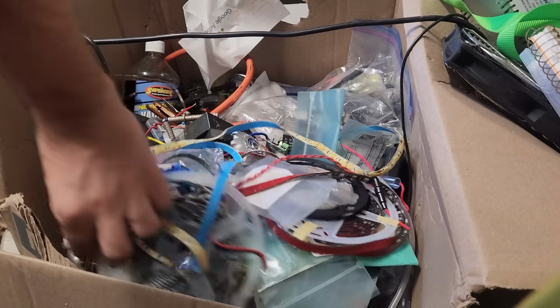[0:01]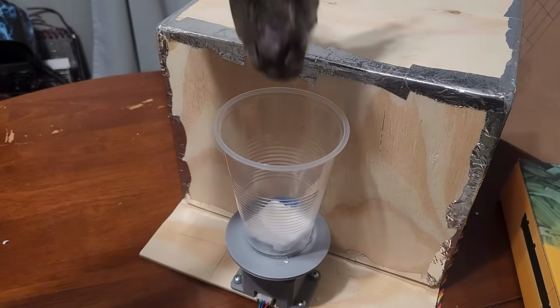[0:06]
Yeah, let's see here. Something to make a video with. Oh, how about a dead rat? Let's chuck him in this guy here.
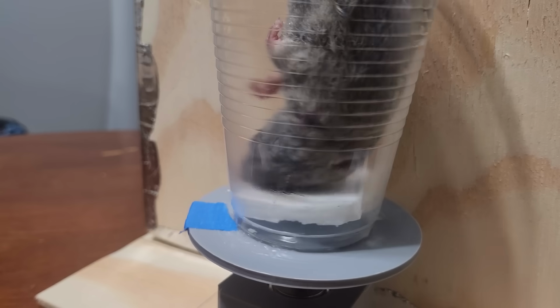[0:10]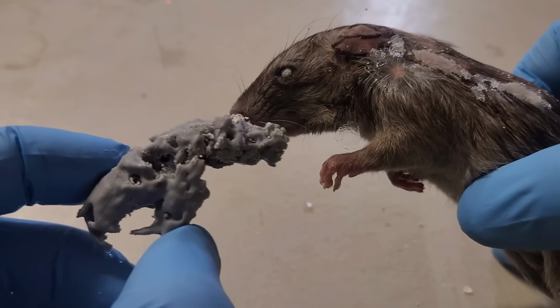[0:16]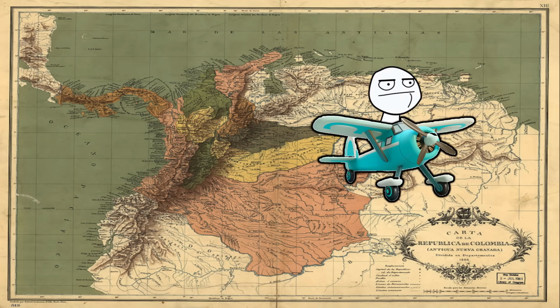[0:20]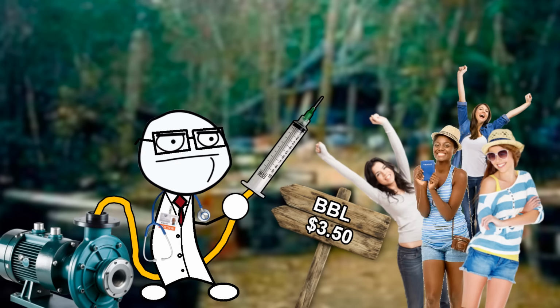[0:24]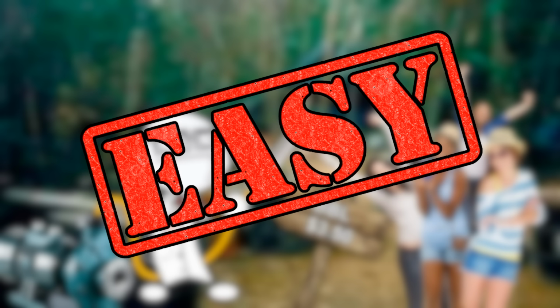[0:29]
I've just recently gotten back from a trip to Colombia where I was making a bit of extra money performing discount BBL operations, and the whole thing got me thinking, being a doctor isn't really that hard. So with that in mind, let's play doctor in this video by revisiting the x-ray machine.
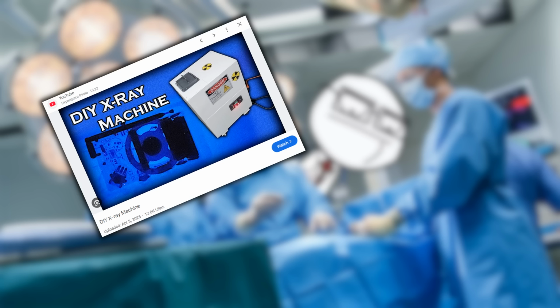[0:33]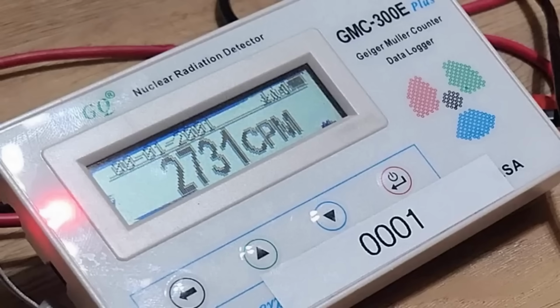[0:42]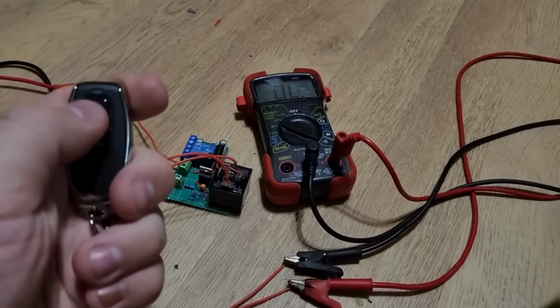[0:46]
A few months back, I built this DIY x-ray machine, which actually worked pretty well, but it's a bit clunky and the 2mm lead shielding I used probably wasn't enough. There was a lot of stray radiation coming off that machine, so I had to be pretty far away and operate it with a remote control when I wanted to take a picture.
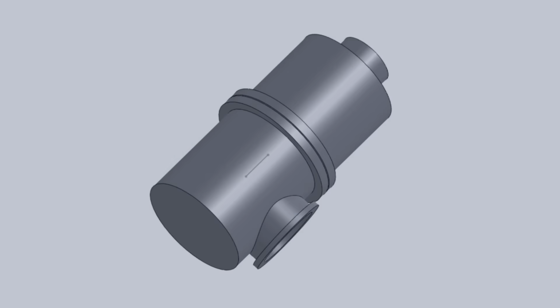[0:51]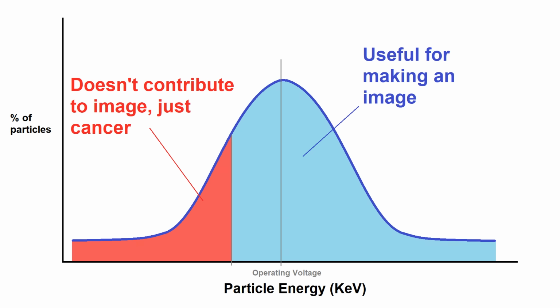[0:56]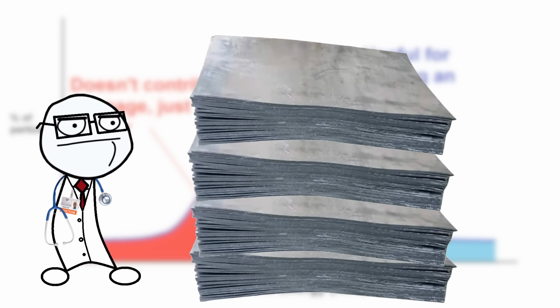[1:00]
So I started designing an aluminum housing for my x-ray tube to help filter out some of those lower energy particles that don't contribute to the picture and are just energetic enough to give you cancer. And I also started stacking up as much lead sheeting as I could possibly get my hands on.
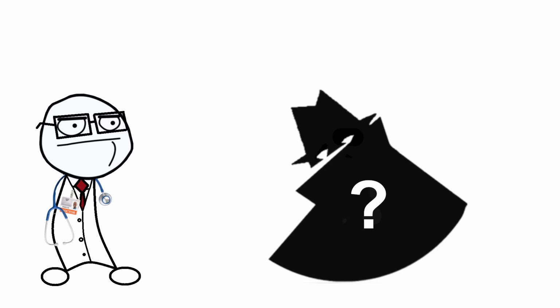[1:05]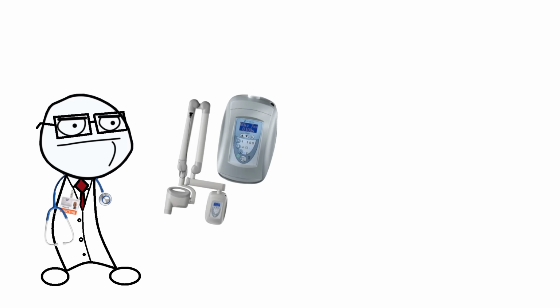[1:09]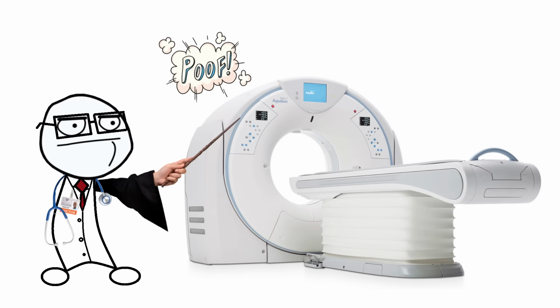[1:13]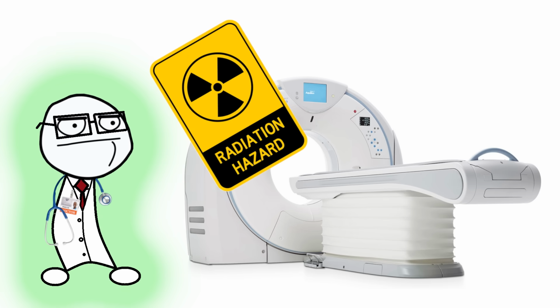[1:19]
But in the middle of doing that, one of my Patreon members, who wishes to remain anonymous, sent me a fully working dental x-ray unit. Now when you get a gift this cool, you don't just let it become a paperweight in the shop, so let's turn it into a CT scanner. I was already planning on doing this with my original x-ray machine, but having a real one will make it a lot easier and less likely to irradiate me.
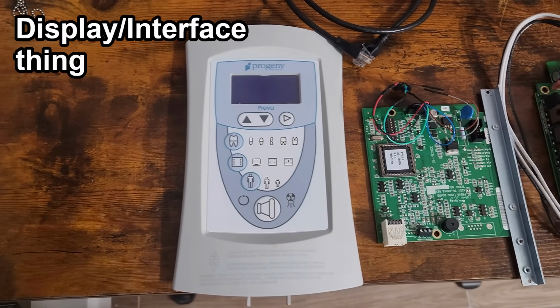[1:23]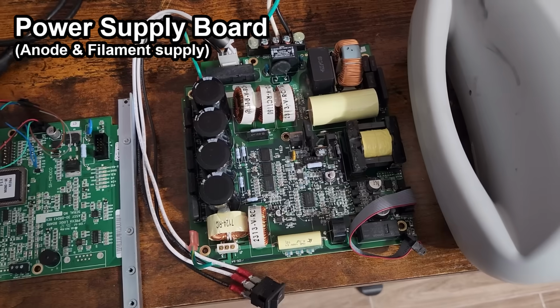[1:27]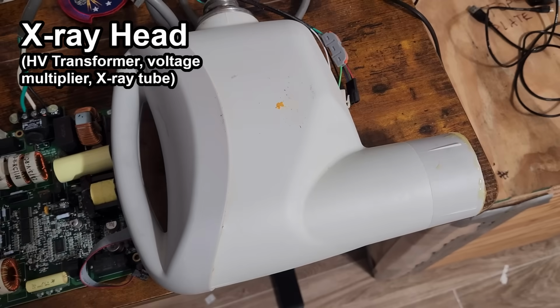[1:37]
The unit consists of four main parts. We've got a display head interface type thing for the operator, a logic board with some software on it, and a power supply board for the x-ray head itself. So I guess this is going to be the H-bridge that drives the high voltage transformer and also the supply for the tube filament. And finally, here's the head itself, which contains the high voltage transformer, x-ray tube, shielding, filters, etc.
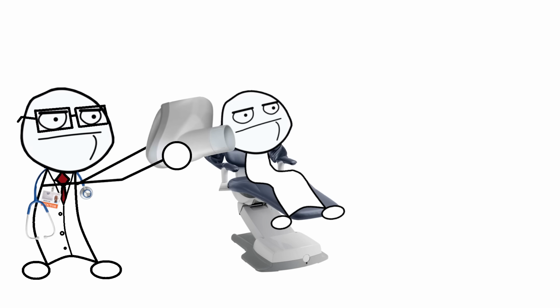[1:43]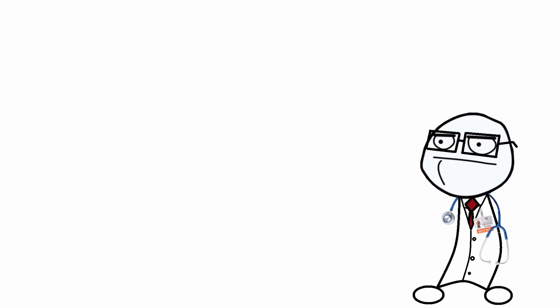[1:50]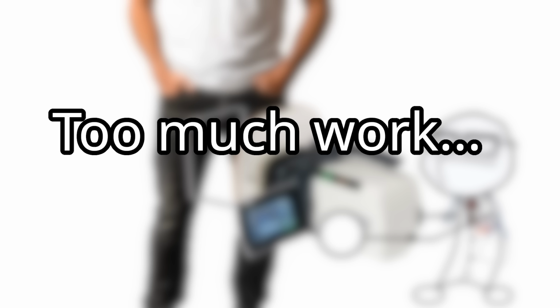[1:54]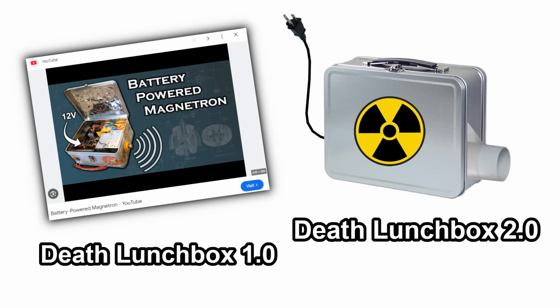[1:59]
The head is the part that the dentist sticks in your face that's usually on a big arm assembly thing, and the rest of the equipment lives in a box that's typically mounted on the wall, although recently a lot more x-rays are portable battery-powered units. I'm not going to do the extra work to make this thing fully battery-powered, but I'm going to make it fairly portable by repackaging all of it into an enclosure approximately the size of a big lunchbox.
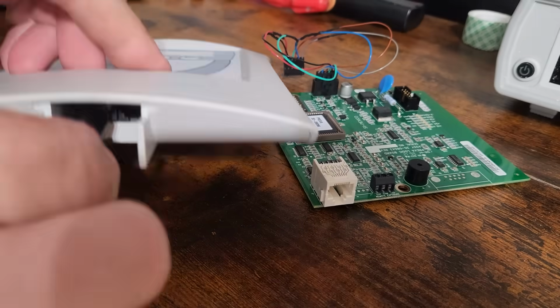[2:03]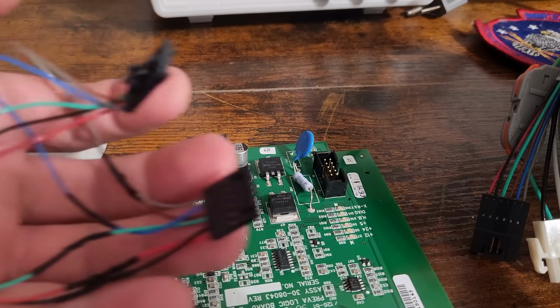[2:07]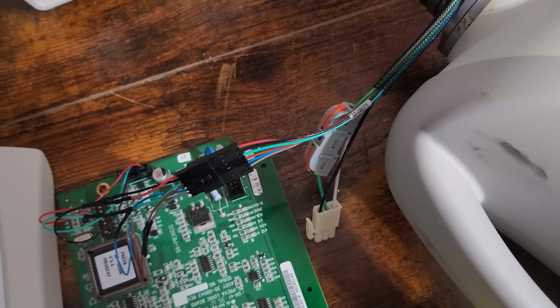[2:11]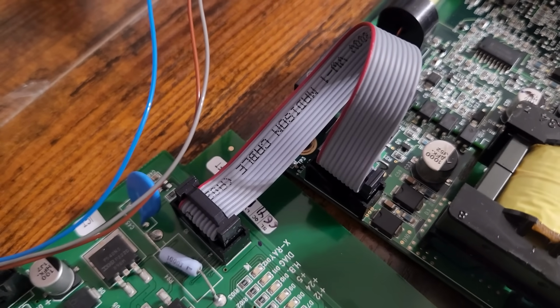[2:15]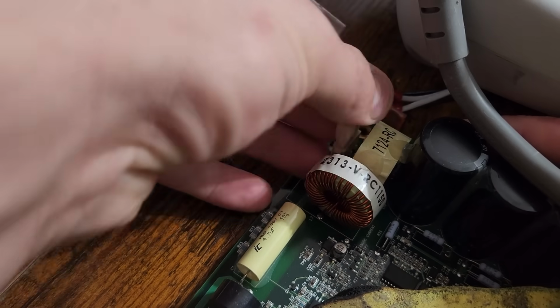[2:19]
But first, just a quick test to verify functionality. I plug in the display head to the logic board with an Ethernet cable, and then had to make this jumper cable thing that goes from the logic board to one of the connectors on the head. Then I connected what appear to be some logic pins between the power supply and the logic board, and finally what appears to be a power connection to the head itself. Here's the whole thing set up on a table ready to test.
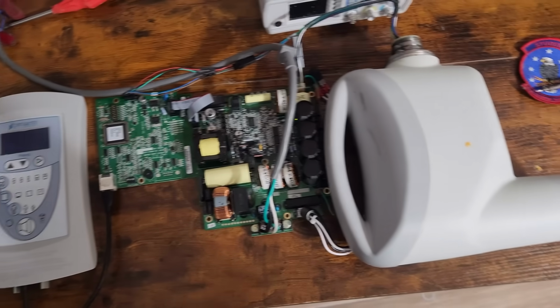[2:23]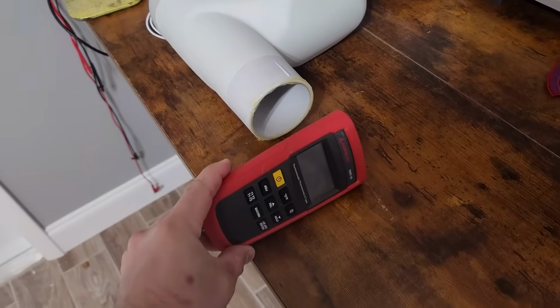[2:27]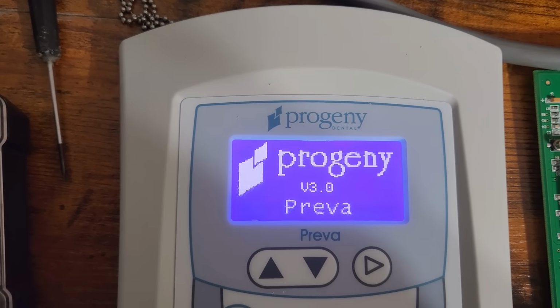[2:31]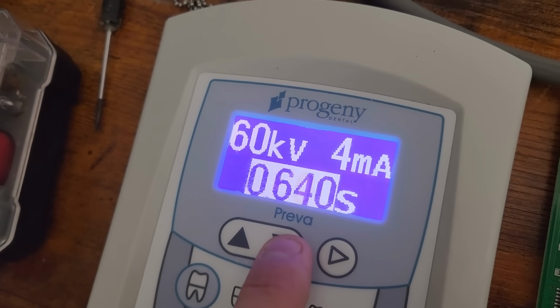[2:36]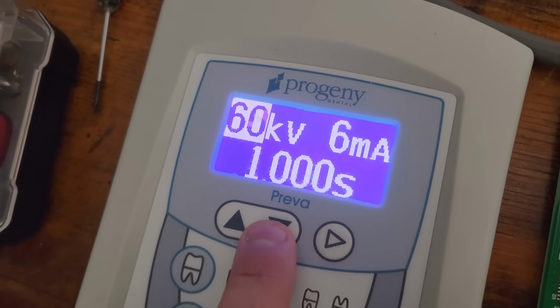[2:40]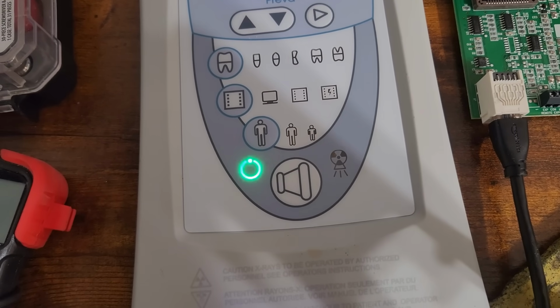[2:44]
I'll put a small intensifying screen in front of the head with my thermocouple meter as a target, and then I'll power up the unit. Okay, the screen comes up, so that's a good start. The interface is pretty self-explanatory and easy to use. The maximum power setting is 6 milliamps at 70 kilovolts with a maximum exposure time of 1 second. To fire it, I just hold down the button and the x-ray fires for the preset time.
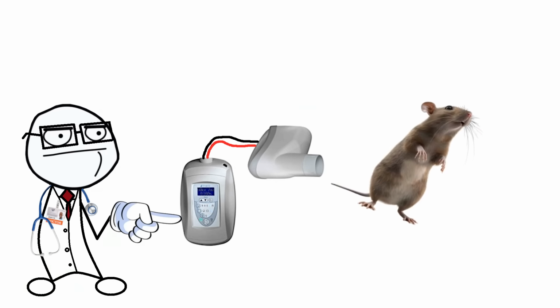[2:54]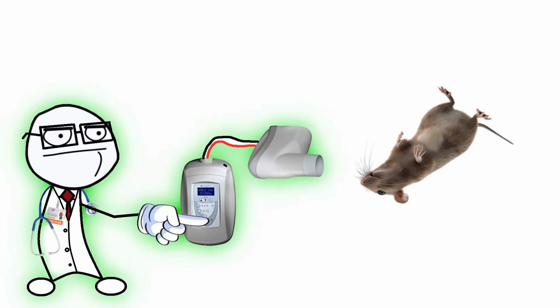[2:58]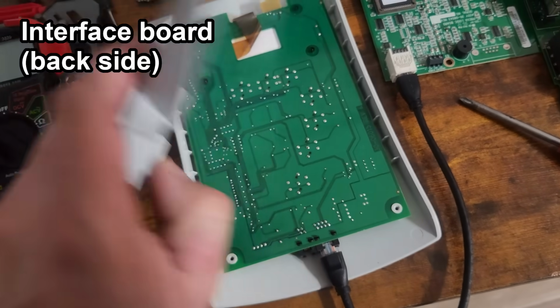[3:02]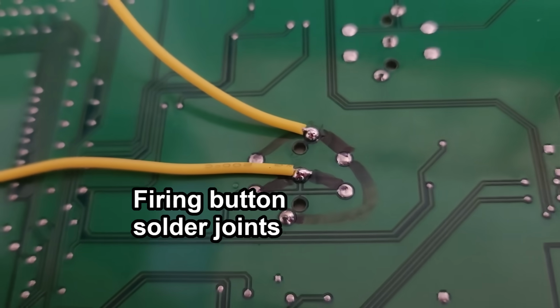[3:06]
Picture looks pretty dim, but this was during the middle of the afternoon and I couldn't get my room very dark, so that's to be expected, but everything is working perfectly. A CT scan takes hundreds of images, so obviously it's not going to work for me to just sit there and press the button each time because I'll get really bored and probably irradiate it too. Fortunately, the firing button is just a simple single-pole switch, so I'll just solder some leads onto the PCB that'll allow me to close the switch with a microcontroller-driven relay.
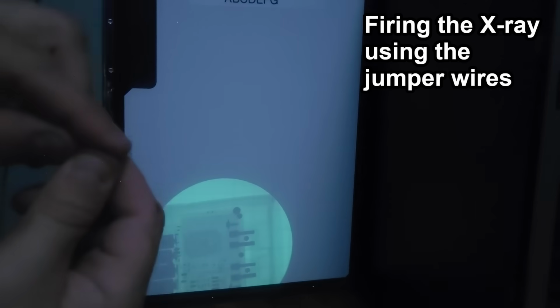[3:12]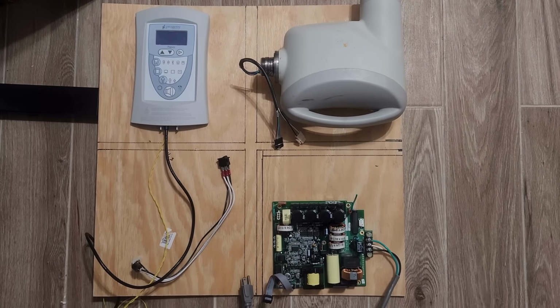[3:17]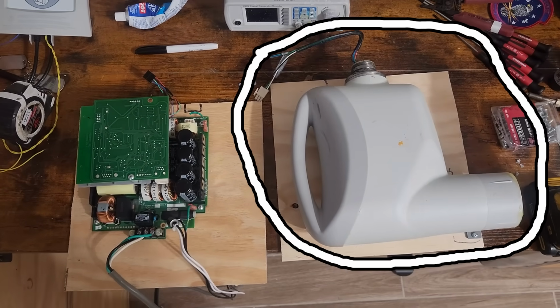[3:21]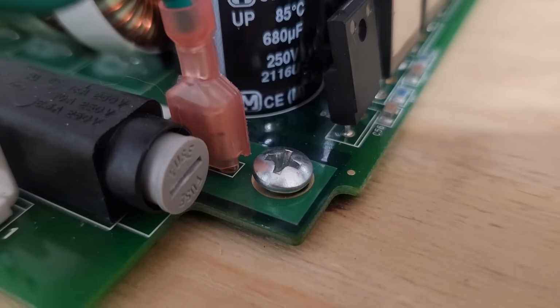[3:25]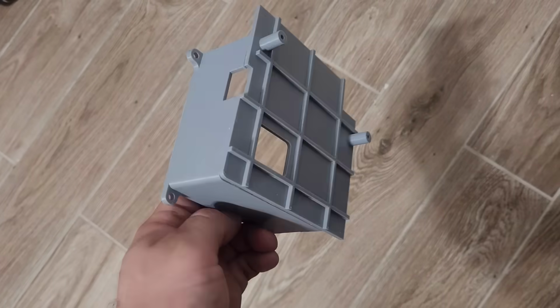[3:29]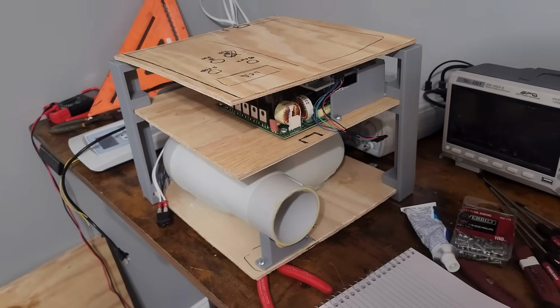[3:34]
Next, I'll mount the pieces of the assembly onto wooden boards, which will go inside a wooden box. The X-ray head will go on one board, and all the PCBs and other electronics I'll add will go on another one. The power supply board will be screwed onto the wood, and the logic board will sit on top of it with this funny 3D printed adapter thing I designed. Then the wooden boards are screwed together with some outer panels using these 3D printed brackets.
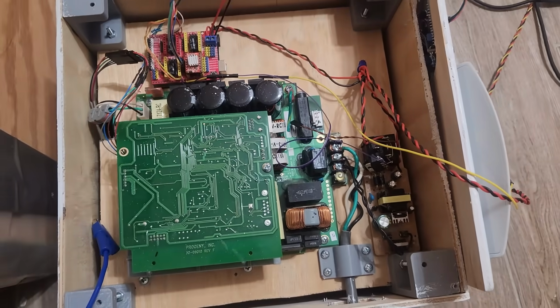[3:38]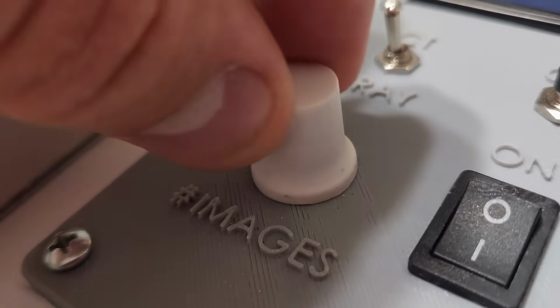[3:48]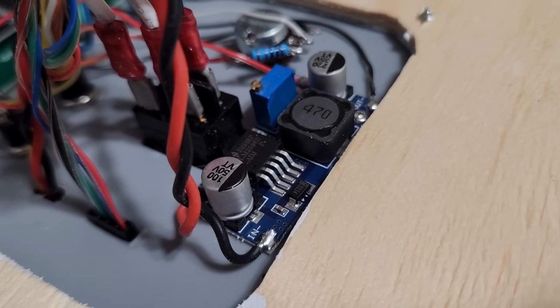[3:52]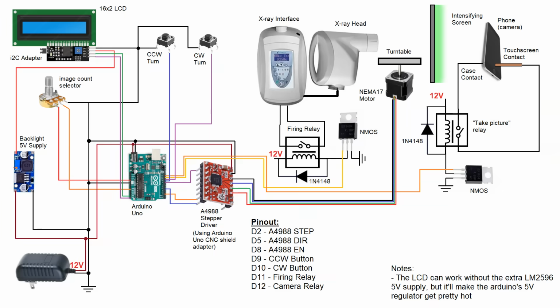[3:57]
Next, I add the control circuit. This is an Arduino that'll control a relay to turn the x-ray on and get the images, and control the turntable stepper motor based on the number of images taken, which will be selected by a potentiometer. The setup also has a buck converter to convert 12 volts to 5 volts to run the LCD backlight, because doing it with the Arduino's linear regulator can make it pretty hot. Here's a diagram of the whole setup.
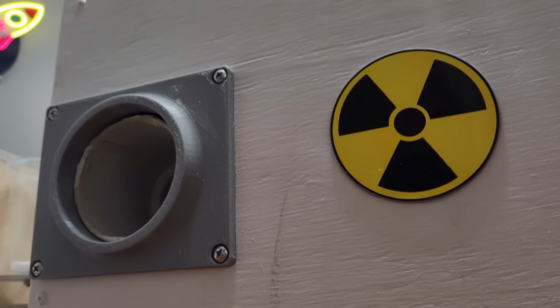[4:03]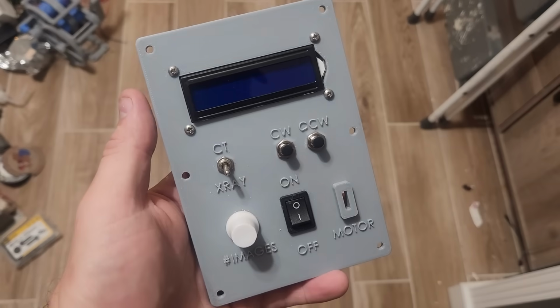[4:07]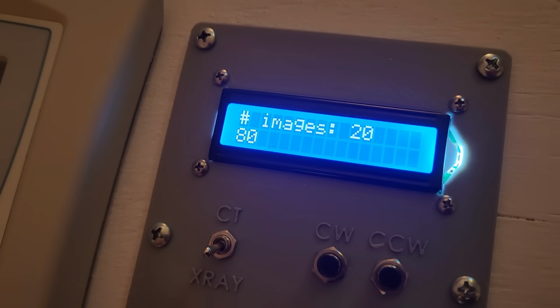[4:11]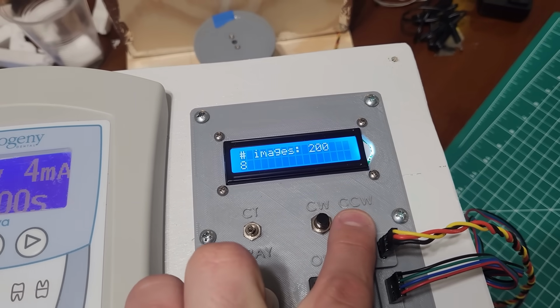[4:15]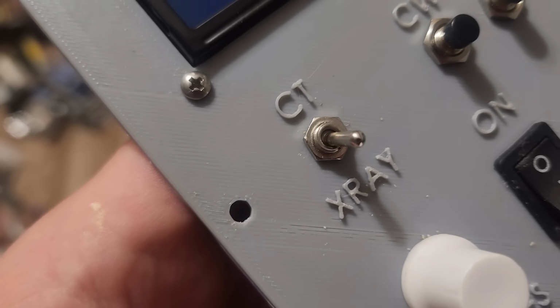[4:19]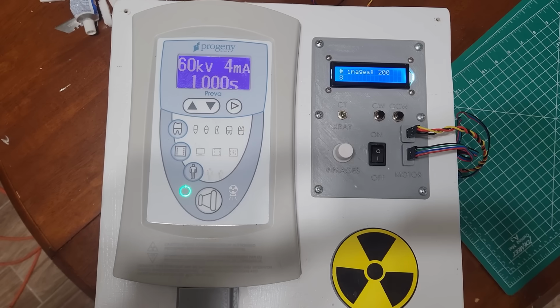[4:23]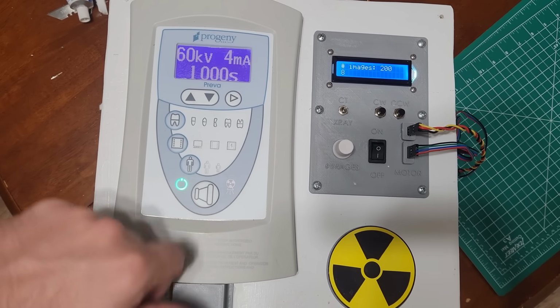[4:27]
Once all that is in place, I paint the box, add some decals to make it look semi-presentable, add a little collar to the output lens thing, and then I printed this interface panel for controlling the scan. With this, you can dial in the number of images for the program to take across a 360-degree sweep, and you can manually turn the stepper motor with it too. I also added this switch to toggle between single X-ray and CT scan mode, but it was totally unnecessary because I remembered the original interface module still works to do that. I didn't feel like reprinting, so there's just a switch here that does nothing.
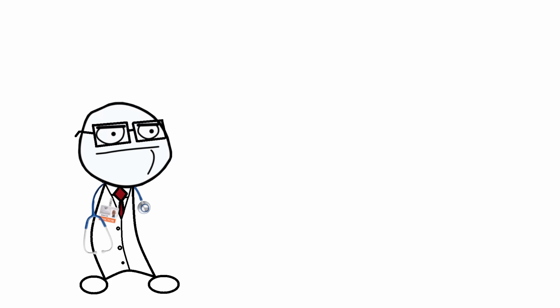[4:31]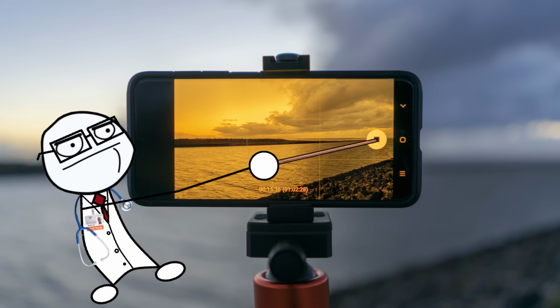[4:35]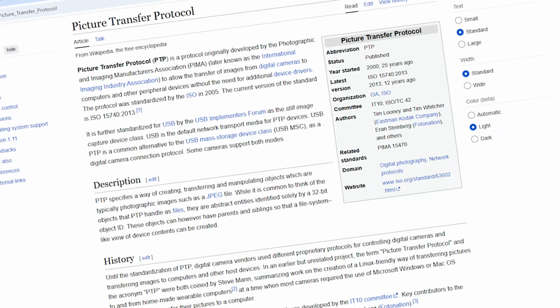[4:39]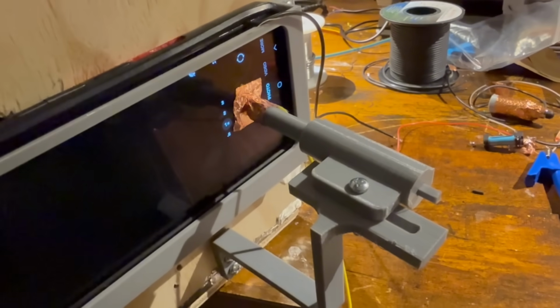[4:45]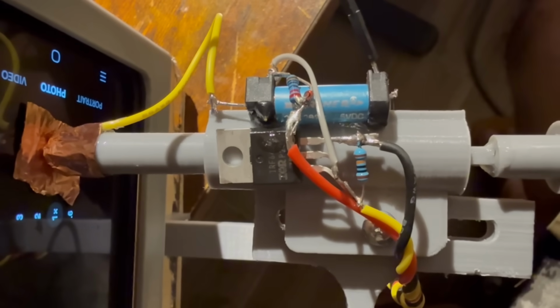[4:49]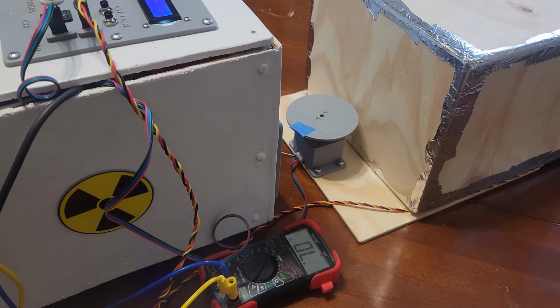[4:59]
I didn't have a proper dedicated camera, so I'm using an old phone, and I need a way to trigger it to take a picture when the x-ray turns on. There are several software solutions to doing this, but they're all kind of annoying, so I'm gonna do it the brute force way with hardware. This is done with a little spring-loaded pin that pushes a wire up against some conductive tape on the screen of the phone where the picture button is. The wire and tape are electrically connected to the phone case via a small relay when it's time to take a picture, and this electrical contact triggers the touchscreen to go off.
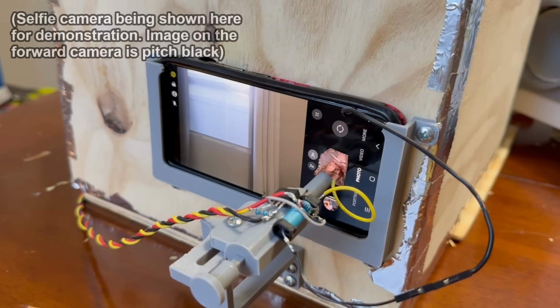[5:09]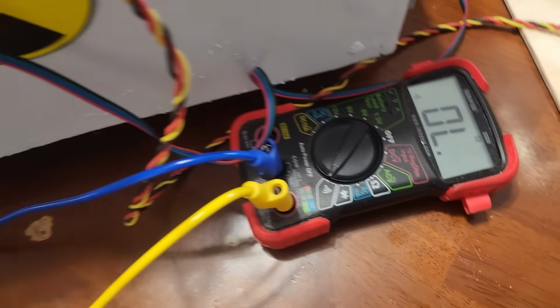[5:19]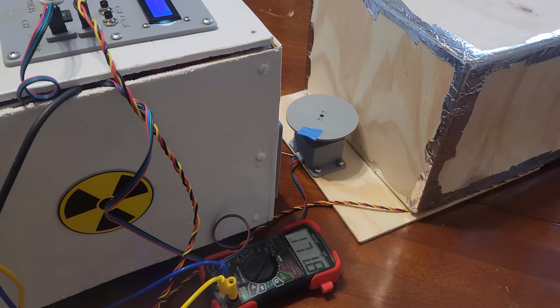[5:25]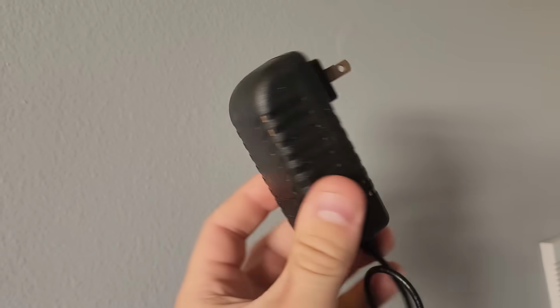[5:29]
The beeping is from my multimeter, but it'll be the switch for the x-ray that's closing when I do the actual CT scan. Alright, that seemed to work. Now let's try it with the actual x-ray running. For a first test subject, I'll try scanning this 5-volt wall wart.
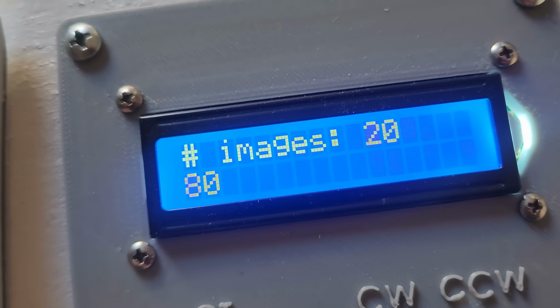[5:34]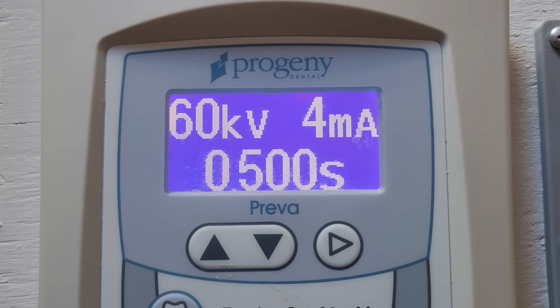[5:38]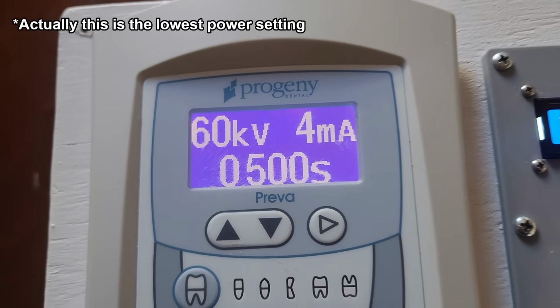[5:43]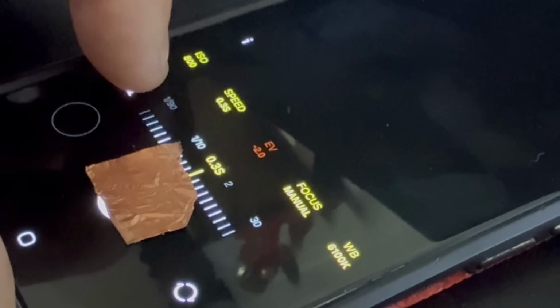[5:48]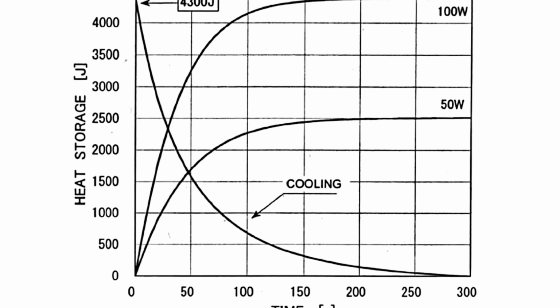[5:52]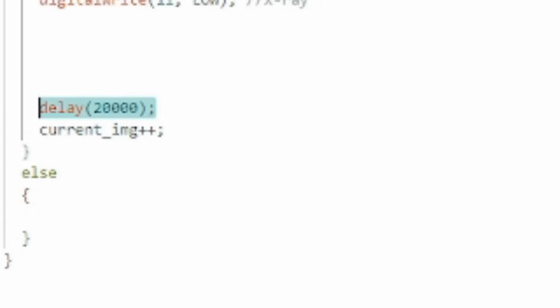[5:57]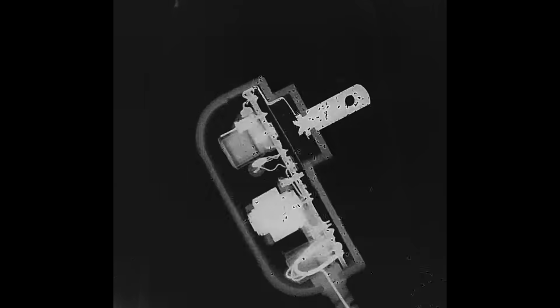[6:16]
The camera was successfully synchronized to the x-ray, and the picture is pretty sharp, but as you can tell, there's still a lot of hot pixels from being directly in the beam, so I'll eventually need to rig up a periscope for the camera. For now, I'm going to proceed as is and see whether or not the hot pixels present a major problem for making the 3D model.
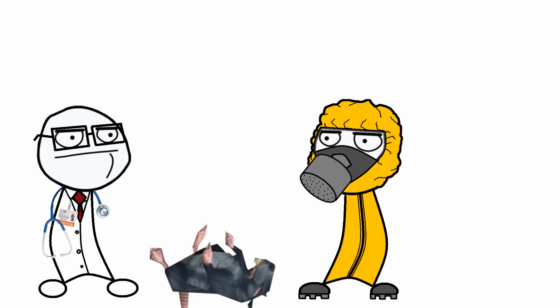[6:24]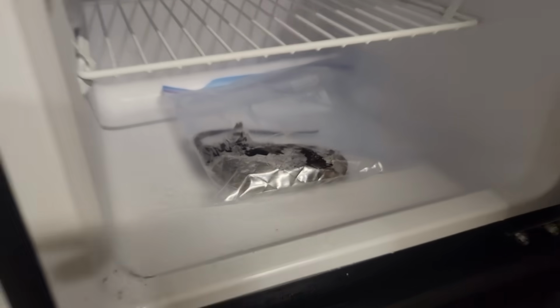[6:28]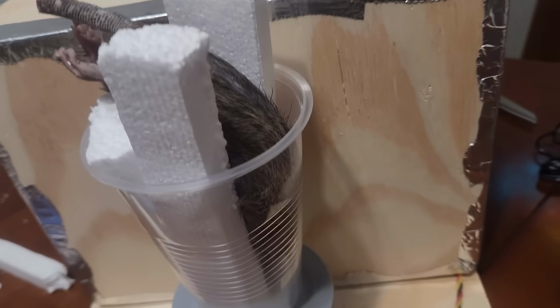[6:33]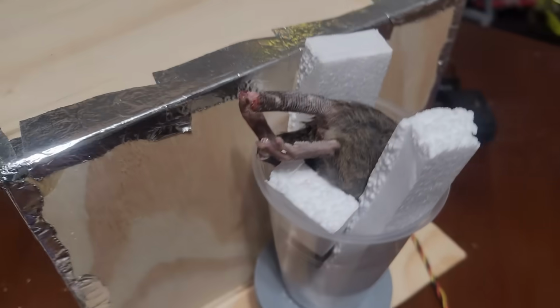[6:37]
I just need a test subject now, so I managed to get a hold of a pest control guy who provided me with a dead rat. I've named him Dave. I freeze the rat solid, then put it in a clear cup that I've glued to the rotor, and wedge it in place with some styrofoam, which should be a low enough density that it doesn't really show up on the x-ray.
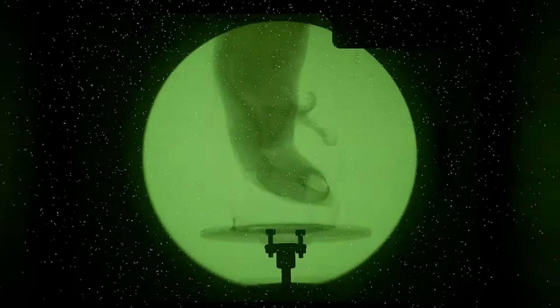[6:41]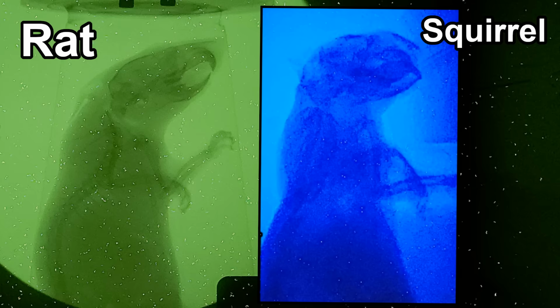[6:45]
Okay, so everything worked and we've got a nice 360-degree sweep of our rat. It's actually pretty funny how similar the skeleton looks to the squirrel I x-rayed in a previous video. I guess that's why they call them tree rats.
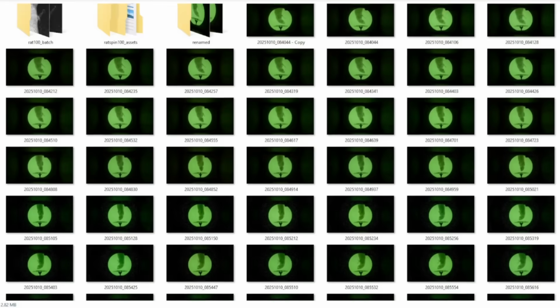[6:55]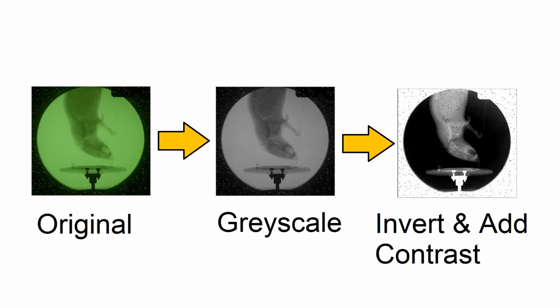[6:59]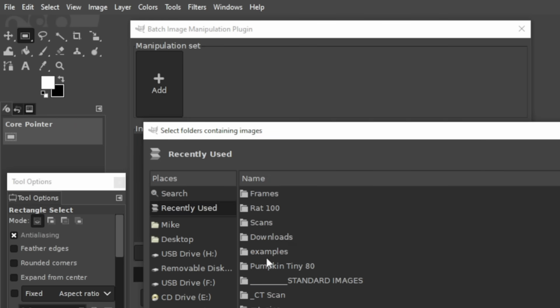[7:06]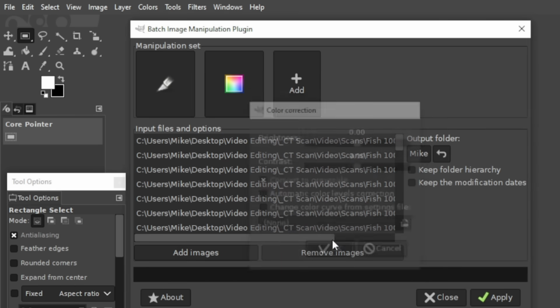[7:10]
As you can see, the noise from radiation on the digital sensor is pretty major in some of the frames, so I expect this will impact the quality of the CT model. Before these can be loaded into CT software, they need to be converted to grayscale, color inverted, and the brightness, contrast, and sharpness need to be touched up a little bit. That's a bit of a process in and of itself, so if you're interested in knowing how to do that, I've provided a link in the description that shows how you can do it with GIMP.
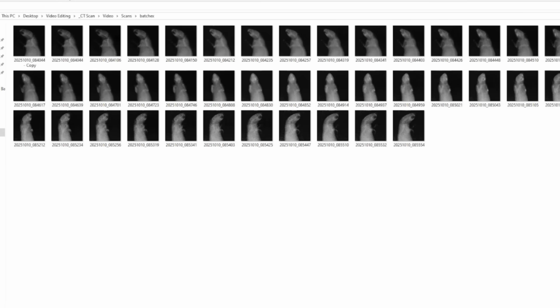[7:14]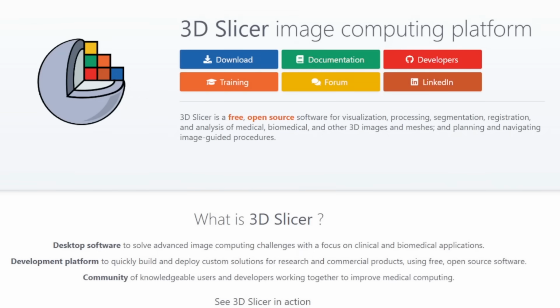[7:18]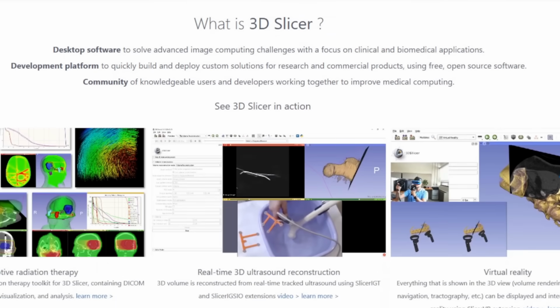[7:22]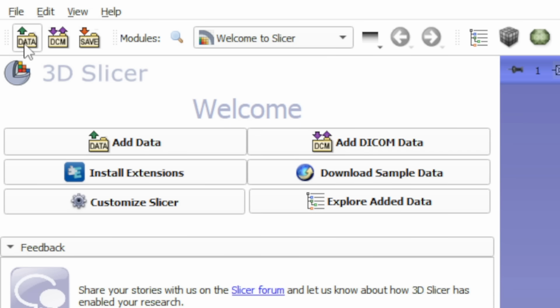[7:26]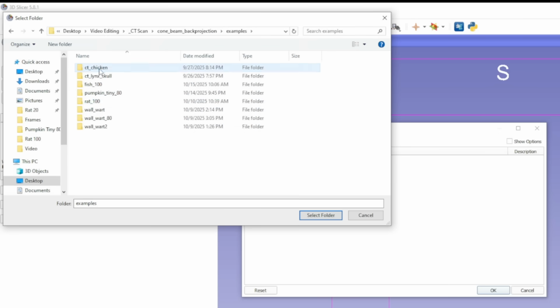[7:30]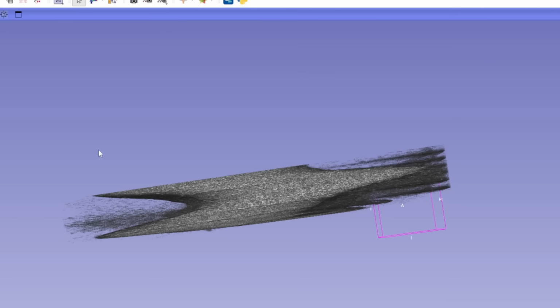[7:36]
So after a bunch of tedious and annoying button pressing, we've got a nice set of grayscale images that are ready for use. The software I'll be using for processing the images is a free program called 3D Slicer, which sounds like something that should be for 3D printing, but it's actually for CT scan data. To import the scan images, you go up to the top left and select Data, and then select the directory that all the CT scan images are in. Then I select Volume Rendering from this drop-down menu, which will allow me to see my images as a 3D model.
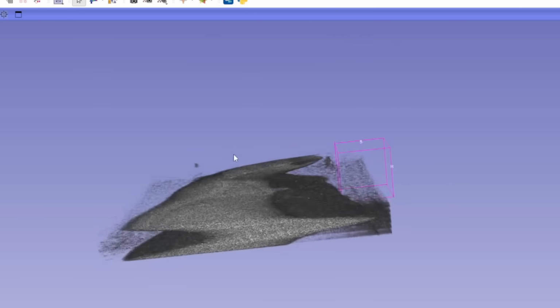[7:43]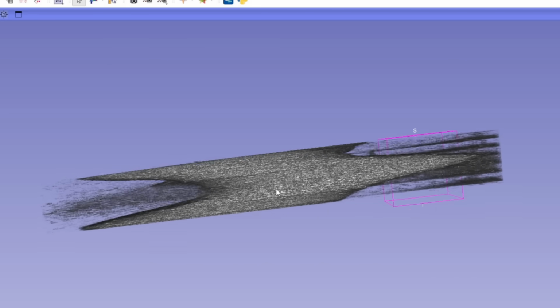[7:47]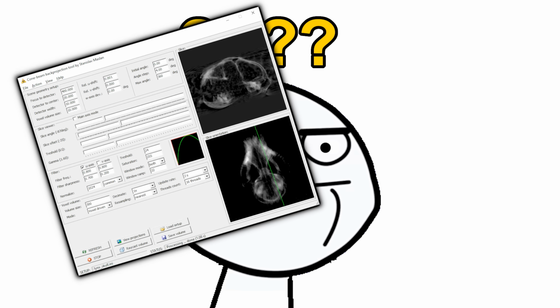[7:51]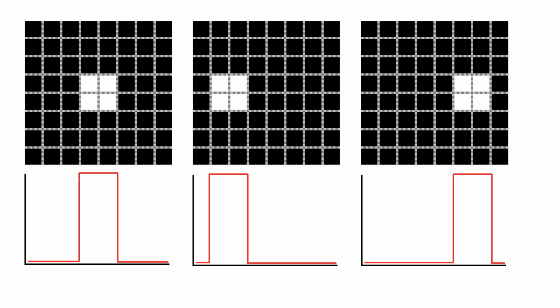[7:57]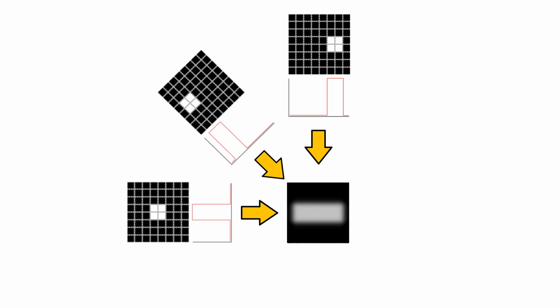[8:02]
This doesn't look quite right, though. After squinting at it for a second, I realized that these funny sinusoidal patterns are because the program is expecting images based on translational slices, not based on rotation. I couldn't find any setting to change this, although I did find this program that takes the rotational projections and turns them into vertical slices, which basically works by looking at the brightness levels along the same vertical lines in each rotational slice, and then turning those into a weighted volumetric point cloud. Seemed to work pretty good though.
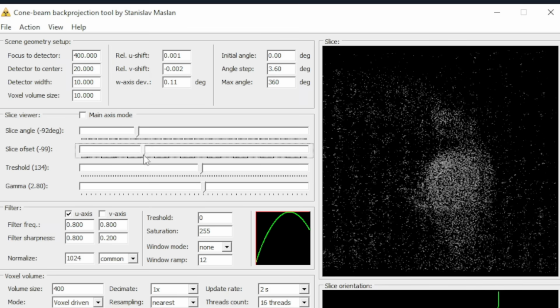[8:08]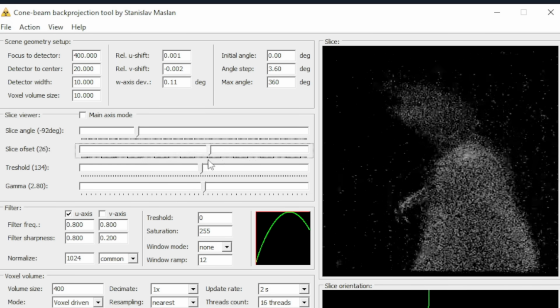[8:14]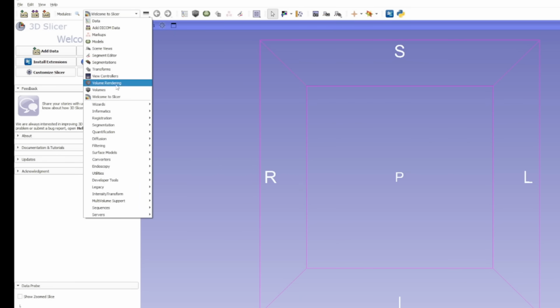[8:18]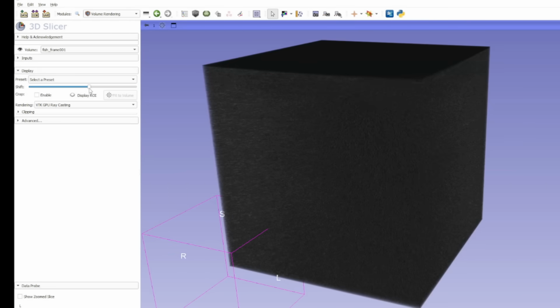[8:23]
Here's a sweep of the rotational images, and now here's a sweep of the slices going vertically, exactly the same as when you use the cutaway view tool, like in some CAD programs. Okay, now that we have the images translated into vertical slices, let's try this again. And that's what I was trying to get. You can see that as I adjust this slider called Shift, it basically adjusts the threshold for what's being displayed based on the pixel brightness, or rather the voxel brightness, since this is a three-dimensional image.
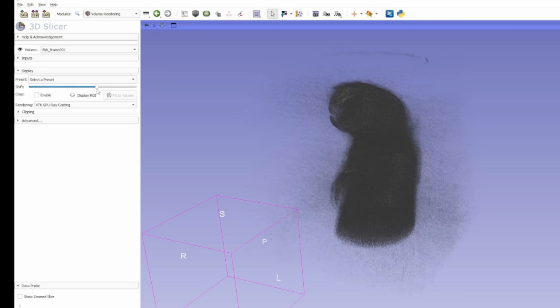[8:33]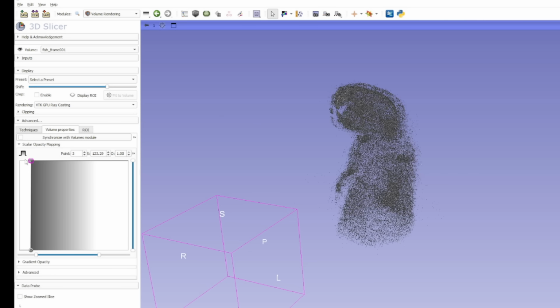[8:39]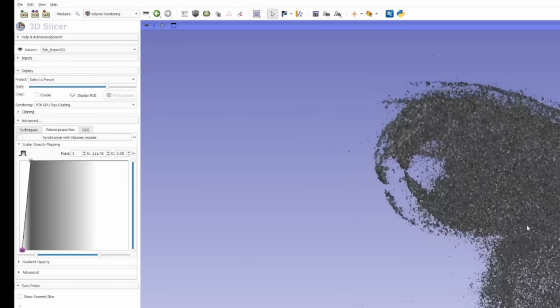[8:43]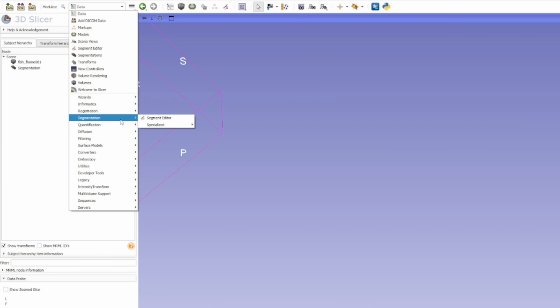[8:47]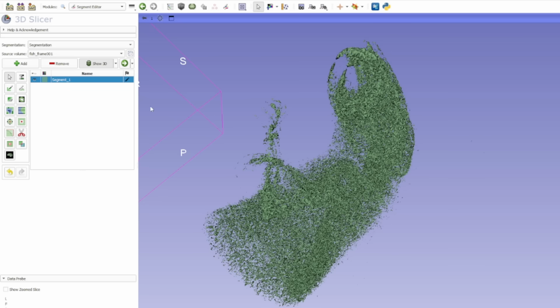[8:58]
Now this doesn't have to be a purely linear thing, you can actually adjust the threshold or gains in this window here, and you can sort of see how that looks as I drag around this slider and the render changes. So now we've got to turn this into a usable 3D mesh for 3D printing. To do that, we're going to go down to the Segmentation tool and select Segment Editor and click Add, then click the Threshold tool to adjust our threshold, then click Show in 3D and hit Apply. And now we've got an actual 3D mesh rather than just a cloud of voxels.
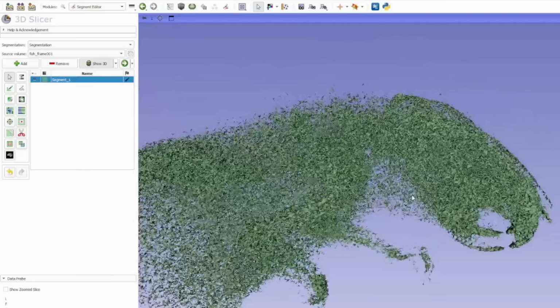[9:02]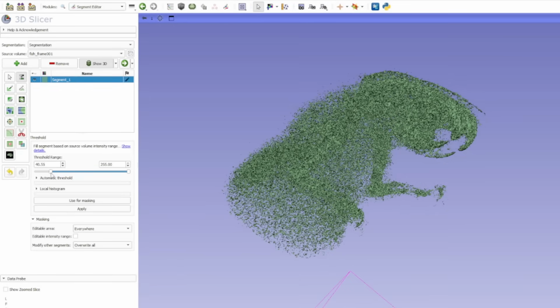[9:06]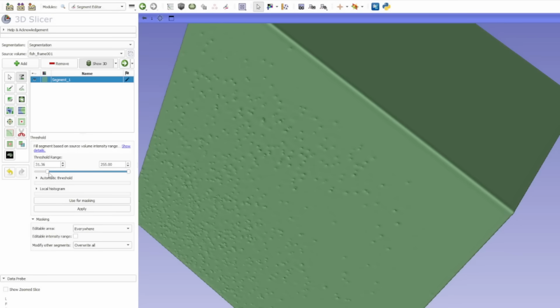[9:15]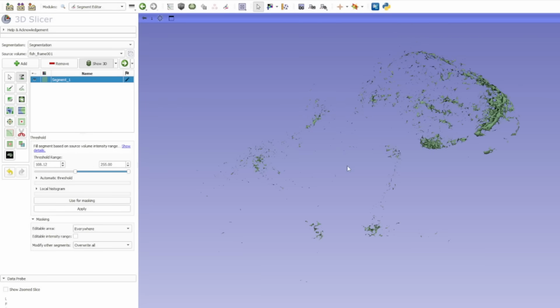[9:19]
Just like before, dialing the threshold up or down includes or excludes more or less material. For example, if we turn the threshold way down, the mesh just becomes a fuzzy cube because it's including all the voxels into the calculation and it slows down the computer a ton. Conversely, if we turn the threshold up, we're just sort of left with sparse blobs floating in midair. So obviously it's going to take a little bit of fine-tuning to figure out the optimal threshold to use for the mesh to be printed.
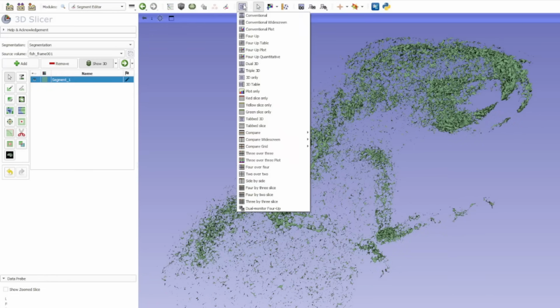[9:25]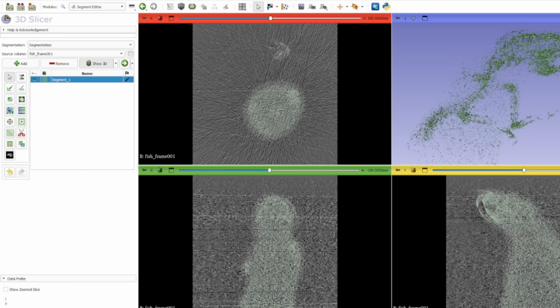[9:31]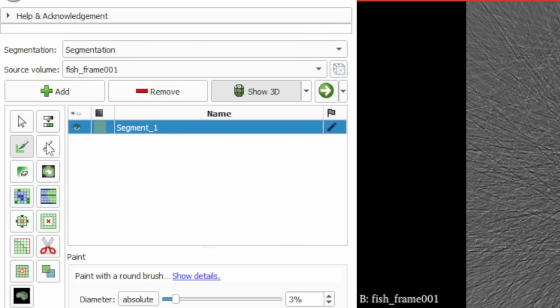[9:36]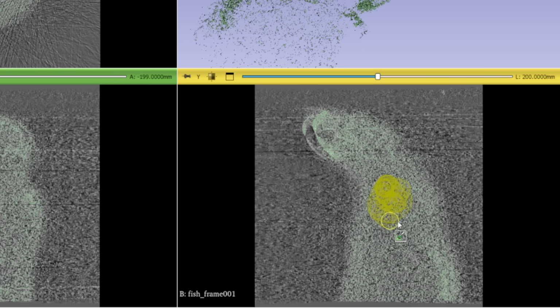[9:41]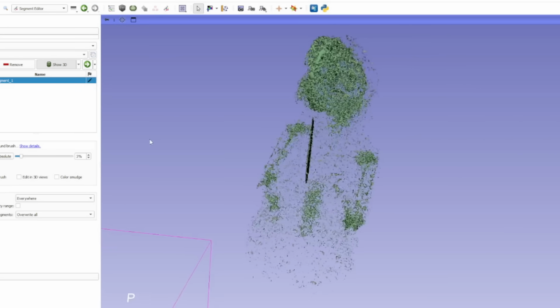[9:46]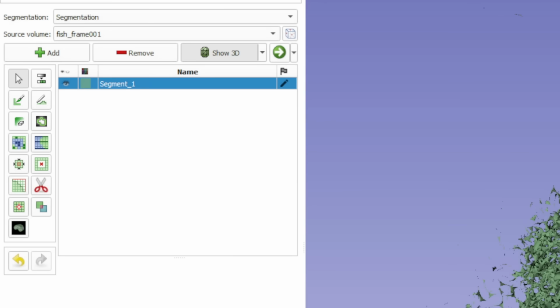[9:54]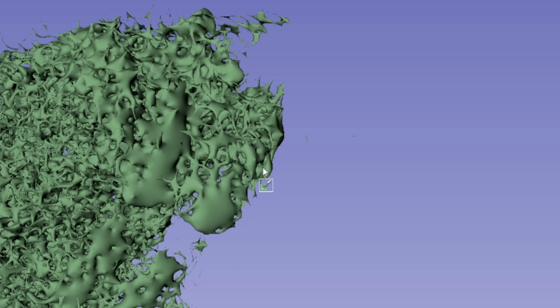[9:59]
If I show the two-dimensional views, the slices being calculated in the mesh are actually highlighted in green, and we can go in and manually add or remove mesh for each 2D slice using the paint or erase tools, which is extremely powerful for tweaking a mesh, removing unwanted burrs or artifacts, and so forth. Here's an example of a bit of painting I did on one of the 2D views showing up as a thin sheet of material, because it was just one two-dimensional slice. So obviously it would be really tedious to build up or remove volume slice by slice like this. The faster way to tweak the mesh is to use the 3D paint and erase tool, which allows you to work directly on the 3D mesh, but it can be a little bit slow depending on how much horsepower your computer has.
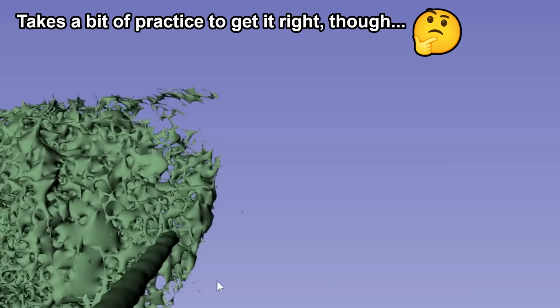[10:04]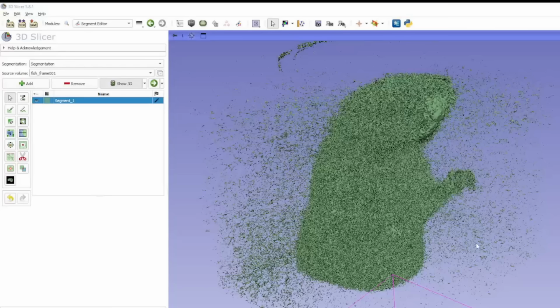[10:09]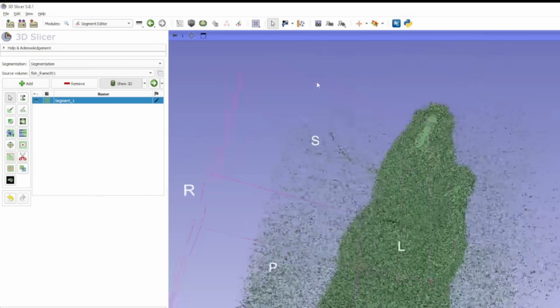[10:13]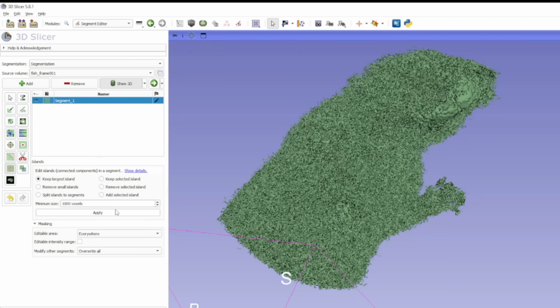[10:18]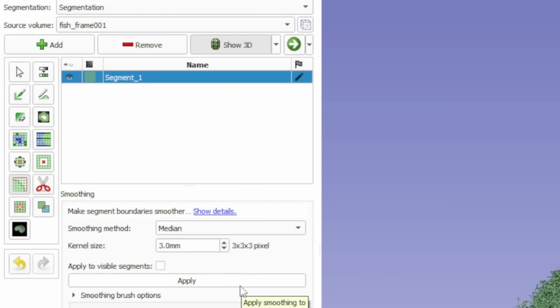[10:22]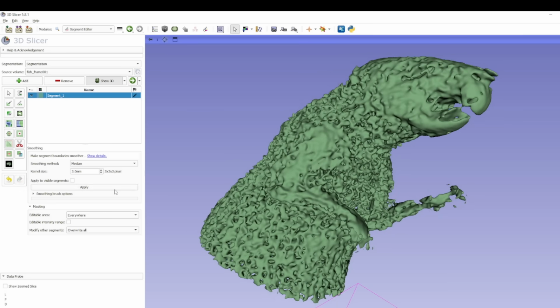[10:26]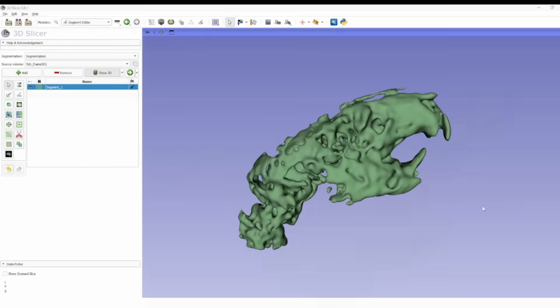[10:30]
If you have your threshold set pretty low, you'll tend to have these floating islands around the object you scanned. You can get rid of them all in one click by using the islands tool, and bam, they're gone. And finally, there's a mesh smoothing tool, which is really great for ironing out a lot of the noisy geometry caused by low resolution images, or in my case, the hot pixels from radiation. A couple iterations of that, and we've actually got something that looks worth 3D printing.
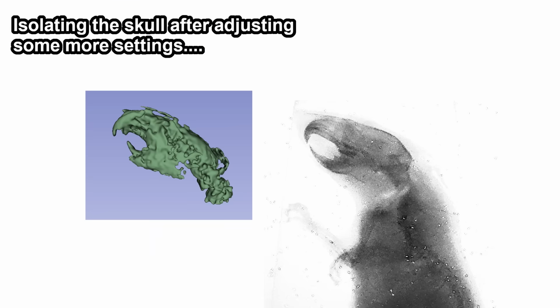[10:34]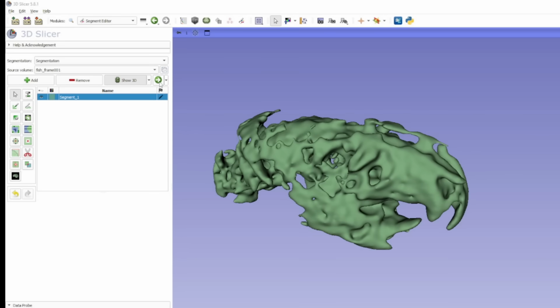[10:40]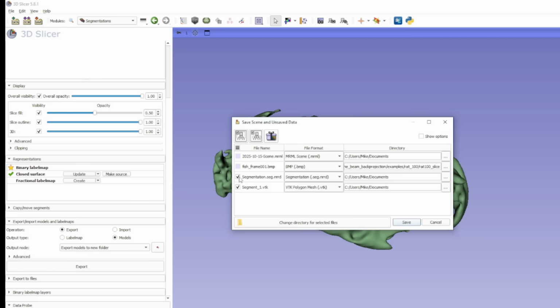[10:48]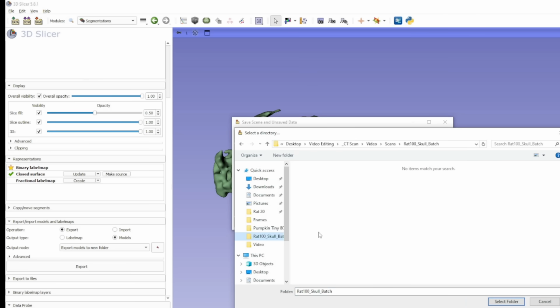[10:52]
There's a lot more tools than the ones I've shown, but I figure these are good enough to get an image turned into a 3D print. I'll click the Segmentations Module button, which is this green arrow, and then scroll down to the Export section and click Models, and then click Export. Then I'll go up to the top left and hit Save, uncheck everything except the bottom row, and then change the file format to STL, select a directory, and hit Save.
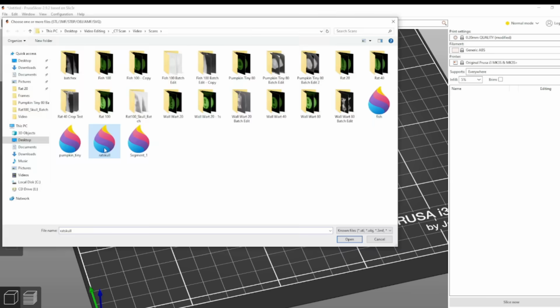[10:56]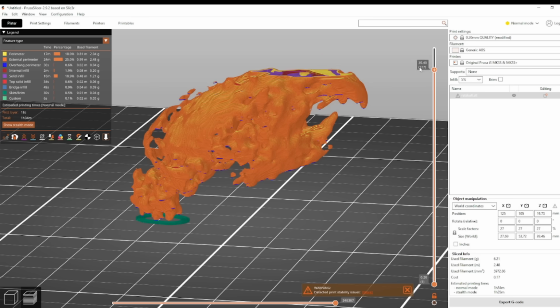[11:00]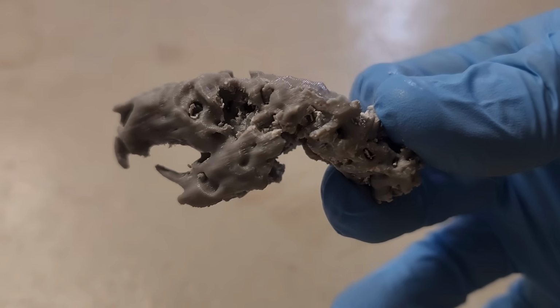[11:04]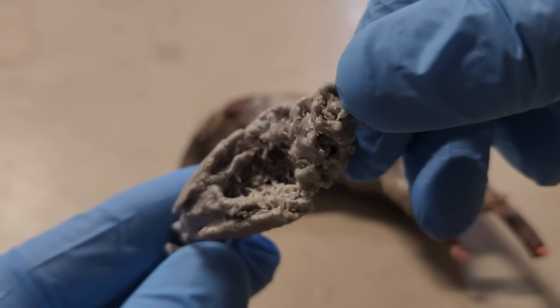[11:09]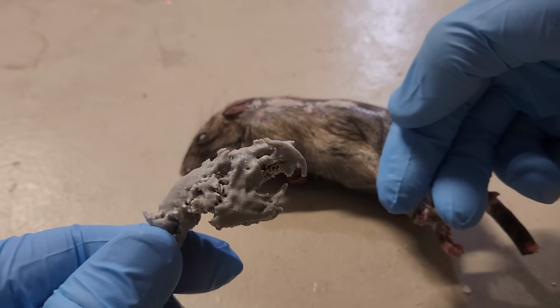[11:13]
Then we'll load up that STL, and the slicer makes some G-code for it without any errors, so it looks like we're good to start a 3D print. And now we've got kind of a skull and a bit of a spinal cord. It's at least got the basics: the teeth, the jawbone, the inside is hollow, and we've got sort of an impression in the areas for the eye sockets.
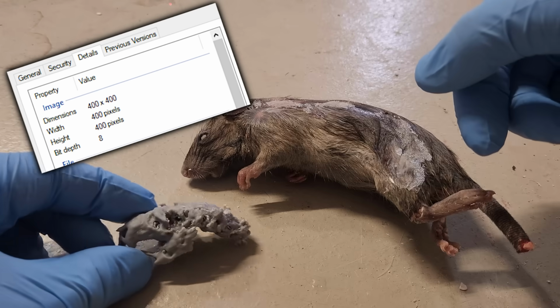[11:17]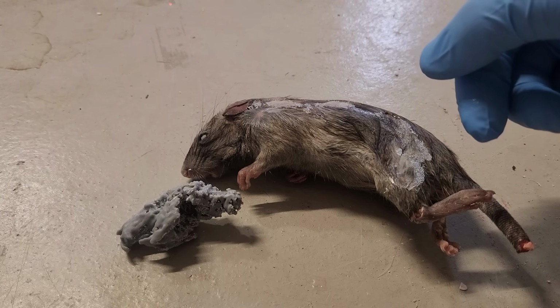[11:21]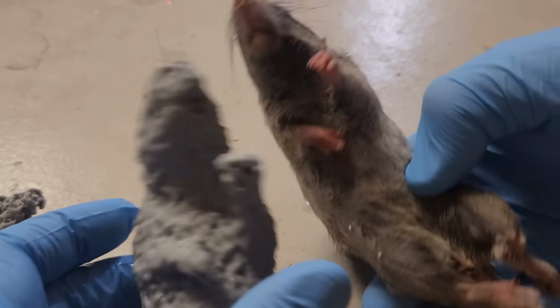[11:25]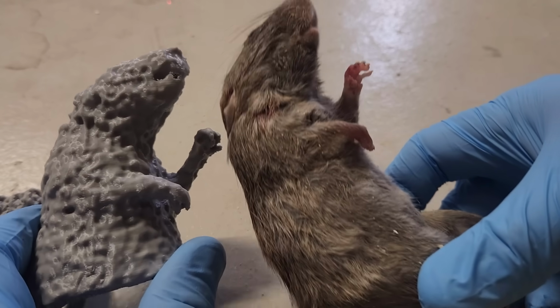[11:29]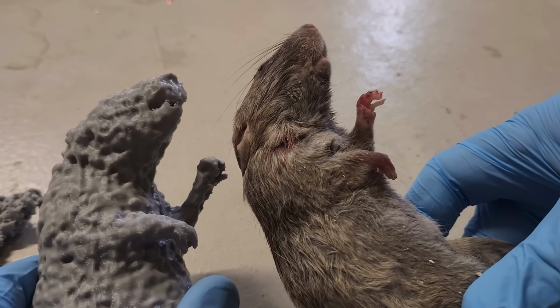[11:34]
The images with the body of the rat were just 400 by 400 pixels though, and a lot of that was contaminated with hot pixel noise from the radiation, so there's a lot of room for improvement. I also did a print that was just the outer surface of the rat's body, and that seemed to conform to the real shape pretty well, although if I just wanted the outer surface, I didn't need an x-ray, I could have just done that with an optical or infrared 3D scan.
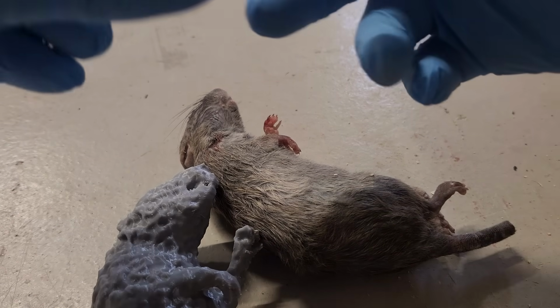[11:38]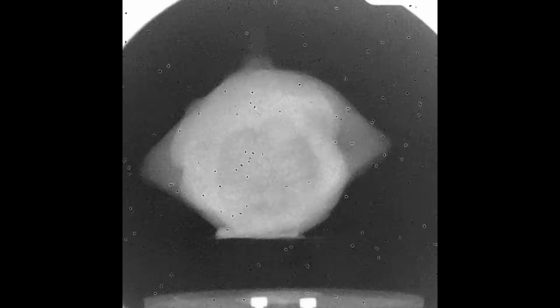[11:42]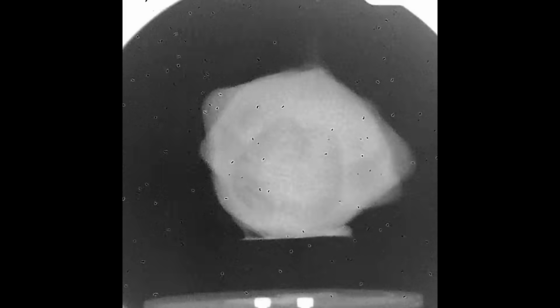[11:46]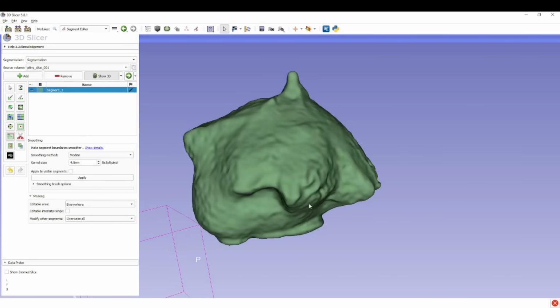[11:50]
Let's try another test subject. It's almost Halloween, so I've got a bunch of pumpkins laying around, so how about this funny little star-shaped one? This scan actually came out pretty good despite the hot pixels, and we can actually kind of see what looks like seed patterns inside the pumpkin. Using the same procedure as before, I convert the images to a 3D mesh and generate some G-code to print.
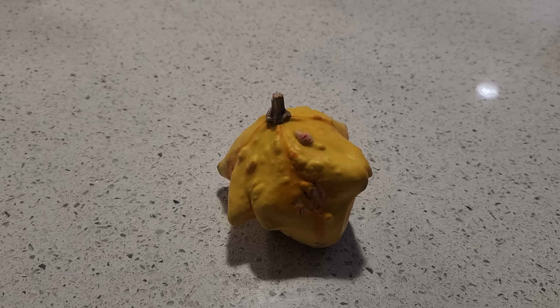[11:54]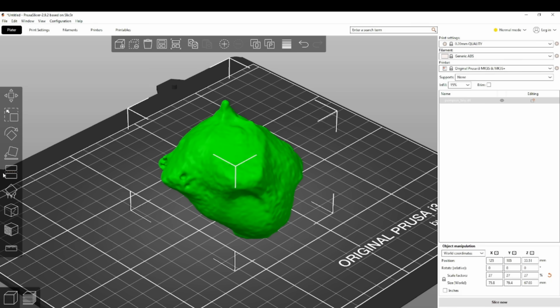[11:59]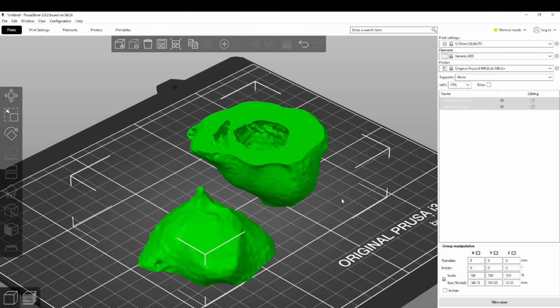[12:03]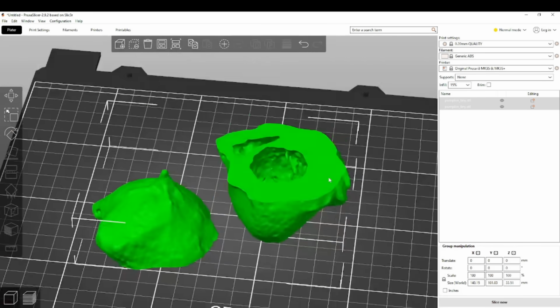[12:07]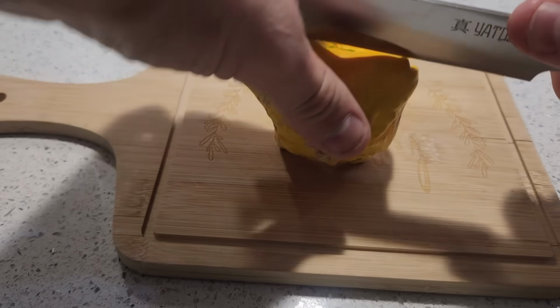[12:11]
The first print is the outside model, which matches the original pretty closely. But there's another important thing we can see here, which is that the inside is hollow. There's a really interesting feature here about halfway up where there seems to be two cavities in the pumpkin, which we wouldn't have been able to tell from external optical imaging. So let's cut the original open at the same point and see if the double cavity is really there.
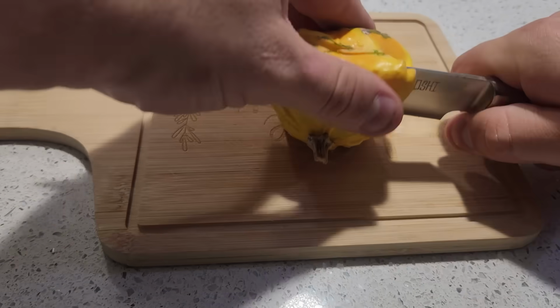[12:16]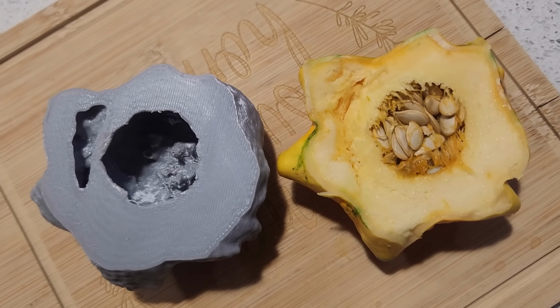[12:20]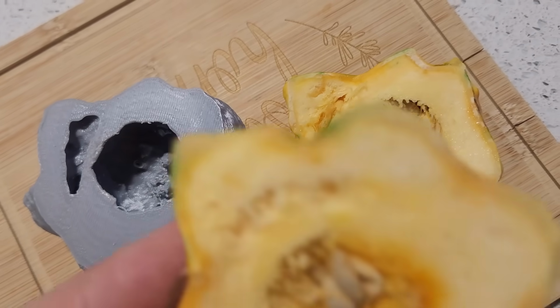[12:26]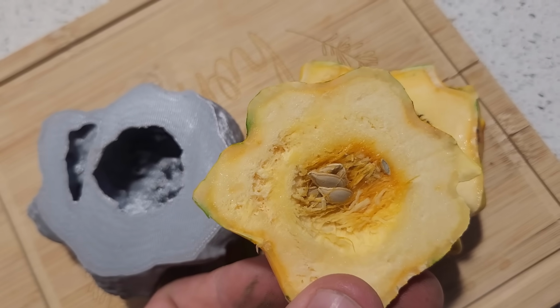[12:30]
Preferably without chopping my fingers off in the process. The second cavity isn't quite as dramatic as the CT model portrayed it, but there's still an area on the left that has really low density fibers that you could just pick out with your fingernail, whereas the surrounding material is really hard and dense. So purely on the basis of density, it was sort of an accurate prediction.
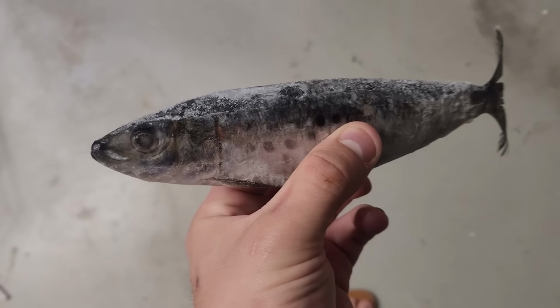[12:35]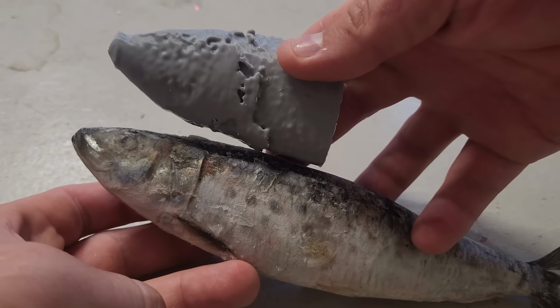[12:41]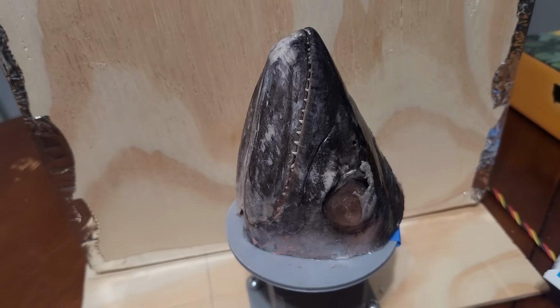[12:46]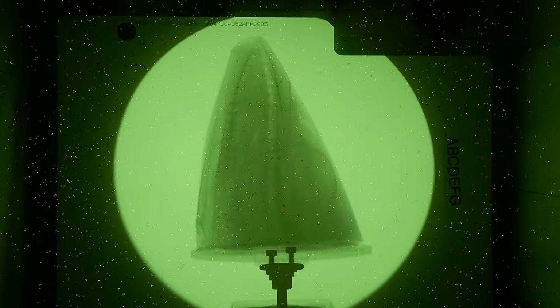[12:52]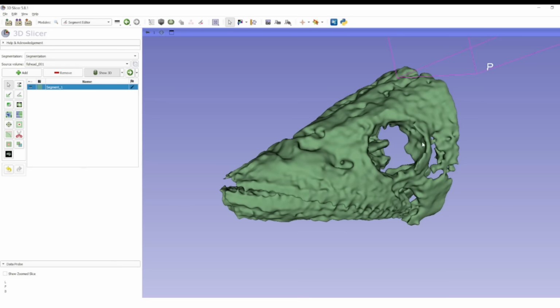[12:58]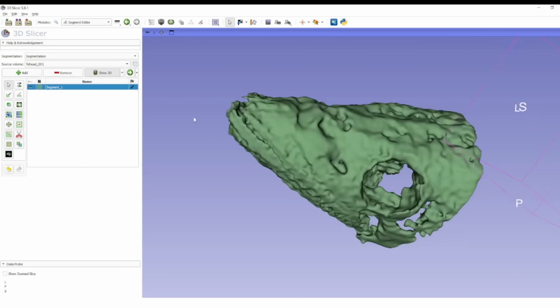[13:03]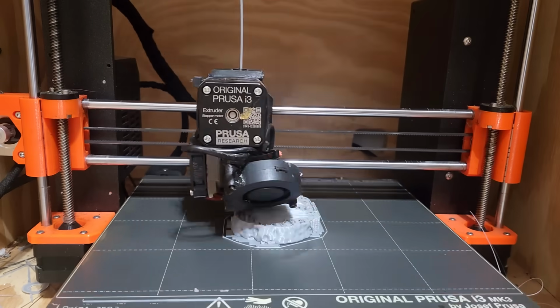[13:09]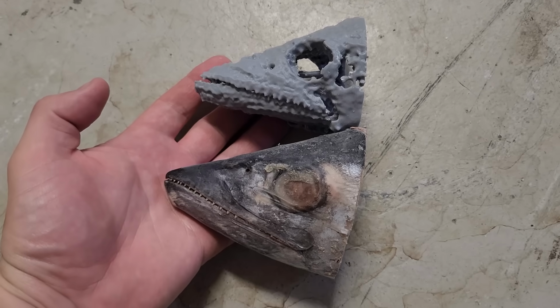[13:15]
Next, I tried a frozen sardine. I was hoping to get a cool fish skeleton model, but I was only able to resolve the outer surface and stink up the room as the fish started to thaw. And finally, I got this big fish head, which will hopefully give me a slightly better detailed model on account of its larger size. The price is pretty hard to beat, too. Okay, that's pretty cool. I think I'm gonna make that a decoration in my office.
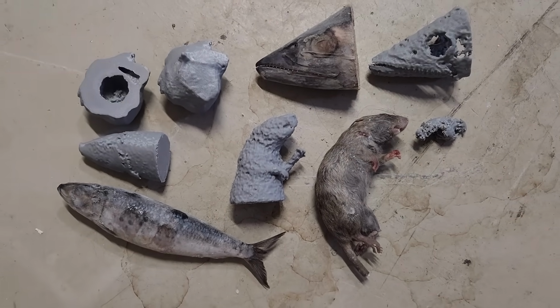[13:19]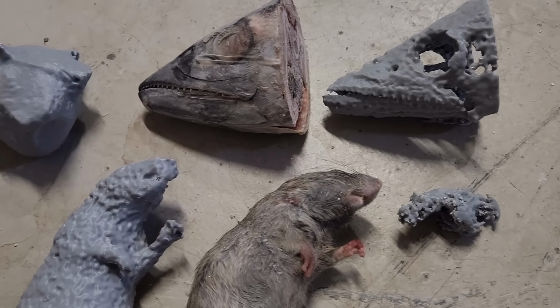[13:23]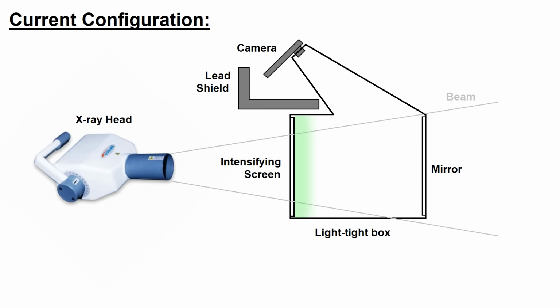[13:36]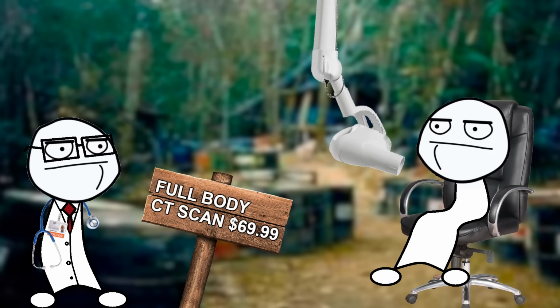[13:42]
Alright, so there you have it, a DIY CT scanner that produces some real results. I was lucky enough to be provided with a real commercial x-ray unit for this, but it could absolutely be made to work with a homemade x-ray system like I built in my earlier video, although I wouldn't recommend being anywhere near it while it's running. The final product could certainly use some polishing between eliminating the radiation dots with a system of mirrors and generating voxel models larger than 400 pixels, but I think this project has shown that a homemade CT scanner for mapping internal geometry of stuff is definitely doable.